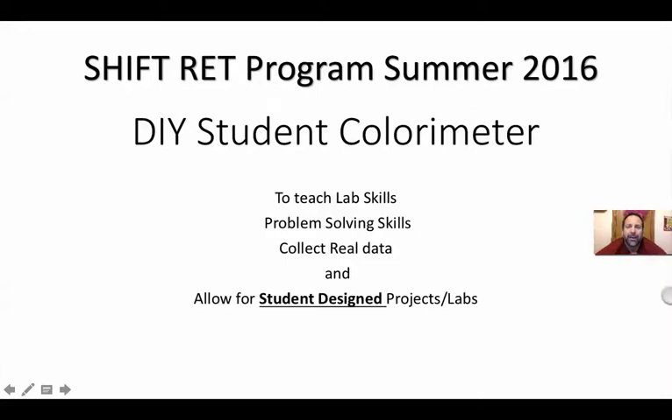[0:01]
Hello. I'd like to give you a little insight into some possible things you can do in labs that may not be as cost prohibitive as things in the past. And part of this came out of a program I was in the summer of 2016. It's an RET program through KU.
We were charged with the task of trying to create at least a lesson plan slash lab that we could actually introduce to other teachers that could possibly help them with various lab skills in their classroom. So what we came up with was very simple, a do-it-yourself student colorimeter. And you're probably saying to yourself, well, we've got colorimeters from different companies. We can buy them. We can have them in the lab already. That is a true statement. But what we are offering is completely different.
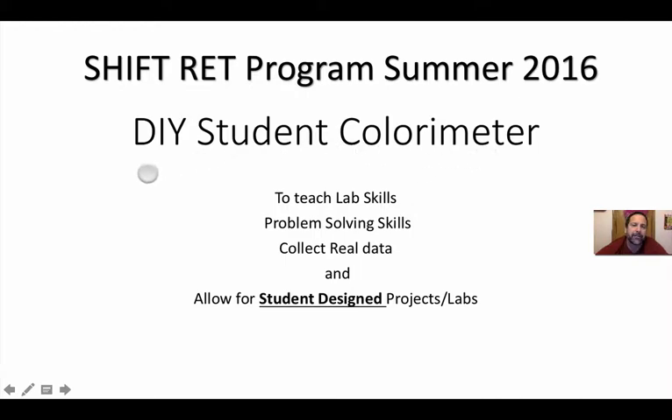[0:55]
It's going to be a very, very simplified version of a colorimeter. And the neat thing is, students put it together, and students have to troubleshoot any problems that go along with it versus you having to look at a piece of equipment and see if it's hooked up right. So why do we want to do something like this?
Well, we want to teach lab skills. We all need lab skills. Students need lab skills, and they're lacking a lot of different skills. Problem-solving skills, which is part of the problem. A lot of times they just push a button on a machine and it reads the number, they type the number down and they don't have any idea what the number means. They're just collecting data, so to speak. Well, they'll be collecting real data with this device we've got here.
And the other aspect here, which is the neat part of it, is it allows for student design projects and labs. Let's have students design a lab and collect some data and try to interpret what they get. That's really the ultimate goal here, hopefully.
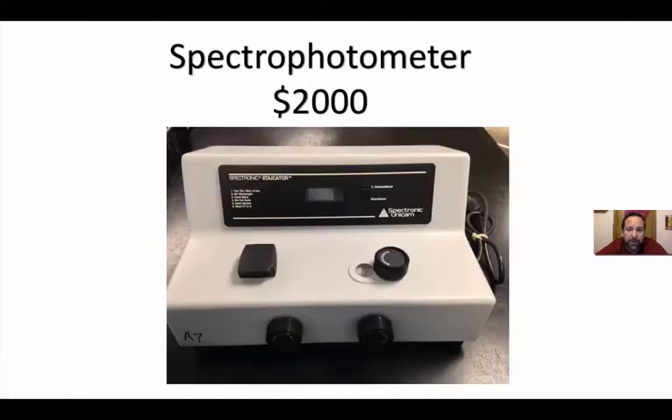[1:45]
So most of you might have something like this in your class, in your lab, a Spec 20, okay? We've got one or two of these at our school. If we've got a lab intensive activity where we have to read out absorbances or transmission, it's one student at a time with this, especially if they have multiple trials to go through. It's a very slow process. It takes days to get the whole class through something like this, okay?
And that's why a lot of teachers sometimes will just use this as a demo. Well, with that demo by itself, all the students look at this and they think, that's just a big black box. I know I put the tube in there, and I look at the number here, and I write it down, and I'm ready to go. Well, we want the students to try to get a little more out of it than that. So this is cost prohibitive in that context.
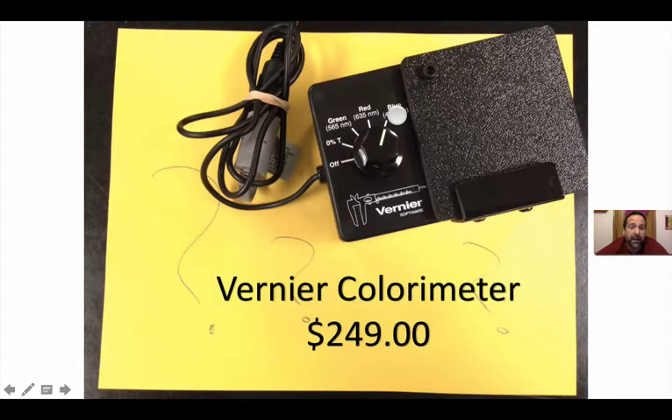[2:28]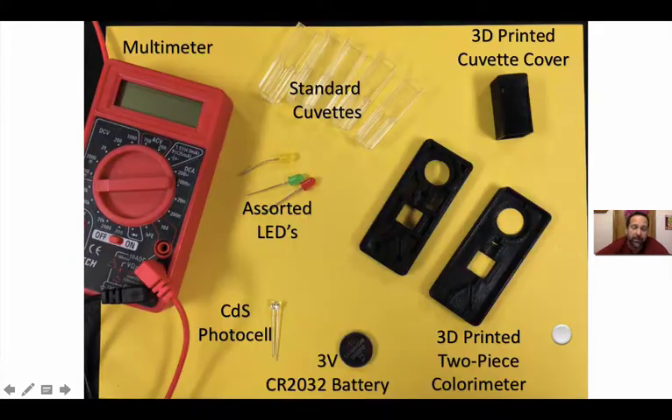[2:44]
The other options you've got now are some much cheaper options. A Vernier colorimeter. A lot of times they have 3 bands at 3 specific wavelengths you're looking at. And they're very good devices, and they're used quite a bit more now than I think Spec 20s. But again, they're about $250 each. What we would like to introduce to you is something much, much more student-friendly.
So a multimeter you can get at any Radio Shack or Harbor Freight. We got ours for this activity for $6 each, okay? Standard cuvettes, if you've got those in your classroom for another device, they're the same size, so they're standard size. We got these, about 100 of them, for less than $15 on the internet. So that $15 goes a long way on those.
LEDs were just little assorted LED packs you can get at like a Radio Shack. These were less than $4 for an assorted pack of 20. We also purchased a CDS photocell, which was a pack of 5 of these for about $4. Okay, and then for the source of energy here we used a 3-volt CR2032 battery, a very common battery you can find at stores.
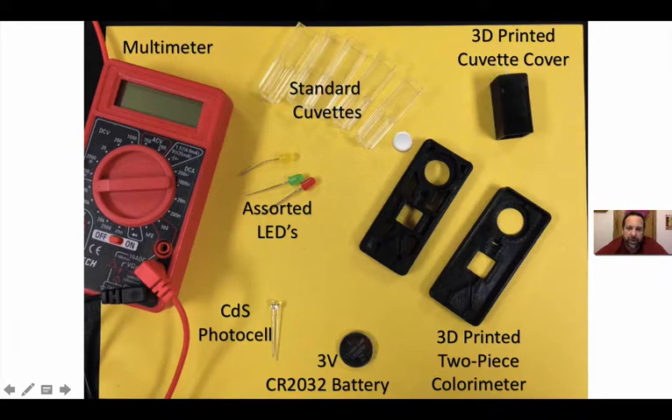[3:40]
Where we've changed the game here is we've added this 3D printed colorimeter. It's a 2-piece colorimeter, and it has a cuvette cover. Okay, and we'll take a look at what this is. Everything on this page, when you combine all this together, is way less than $20 for this setup. And what's neat about it is it's pennies to actually print these if you've got a 3D printer, and we have all those files for you.
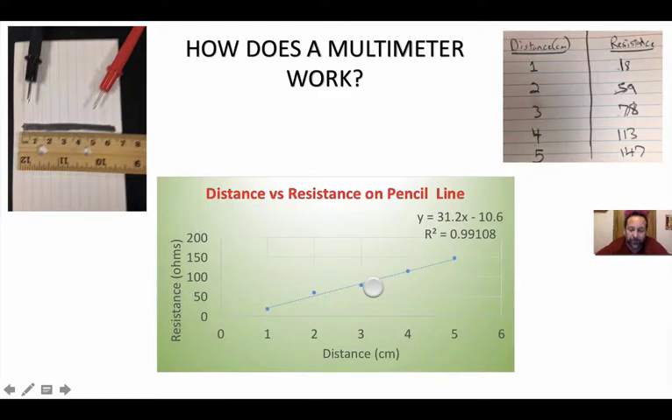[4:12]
First of all, if you hand a kid a multimeter nowadays, they don't know what it does or what it is. It's got a lot of dials on it, etc. So one activity we start with is, if you're going to use this equipment, you've got to know what it does and how it works. One introduction to doing that is very simply getting a note card, having them write a pretty thick graphite line with a pencil, and then having them try to determine the resistance in ohms at different distances along this line. A very quick data set we collected from 5 different centimeters, and those are the resistances we got. We graph that.
We got a line of best fit. We get a 0.99 correlation coefficient, which means that's a pretty good fit. It gives you a very good idea, at least it does to me. Now, a student that does this needs to look at this and try to determine what the relationship is. Is the resistance going up as I go away from my point of origin, or is it going down? Again, problem-solving skills using graphing, and also probably introducing some Excel spreadsheet activity if you could.
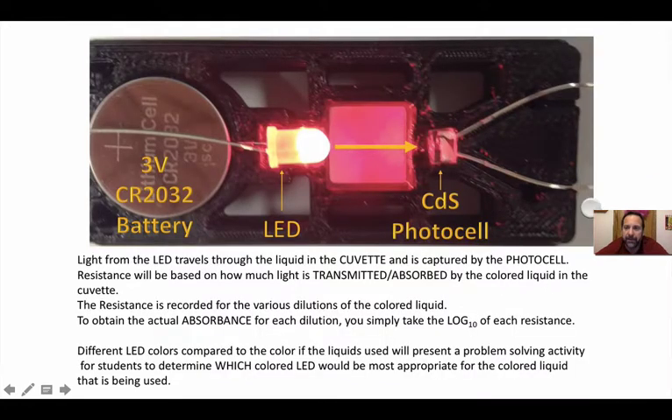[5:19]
Now, the meat of what we've got here for our device is this. This is just looking at it from the top, with the top off. This is the base plate of the 3D printed colorimeter. We've got a 3-volt battery that essentially powers the LED, in many different LED colors if you want. This is the opening for the cuvette to be sitting in. And then this is the CDS photocell that receives any light that comes through the liquid. Based on the liquid you put in here, a certain percentage of that light will either come through or will not come through, and based on that, this is going to read a certain resistance. These are connected to your multimeter leads.
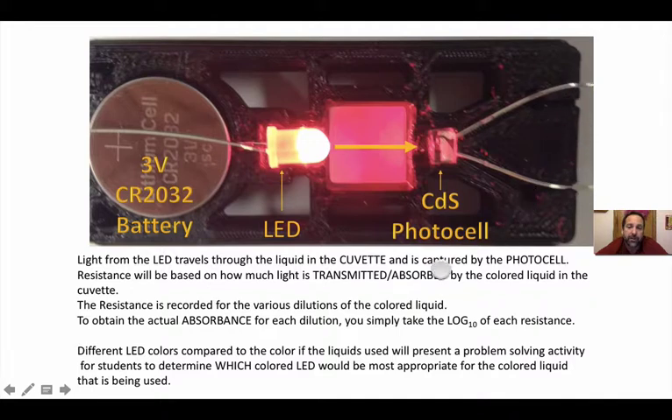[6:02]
All right, so what happens is the cuvette is essentially housing the liquid that you're trying to determine the concentration of. So this is a very simple operation. The only difference here is if you're actually going to look for absorbance, all you do is take the log 10 of your resistance value, and that will give you the absorbance, and that's based on a common formula.
So the benefit here is you've got any number of different LEDs you can use. The question is, which LED do you want to use if the liquid's red, or if the liquid's blue, or if it's green? What's the best LED to use? Those are questions you could answer, but it would be much better for a student to determine which one's best to use. And how would they do that? Well, they'd have to set up some experiments to determine that. That way they actually have a very good working knowledge of the whole device.
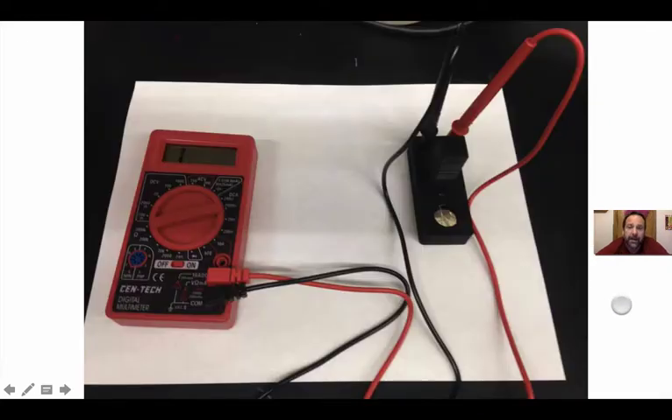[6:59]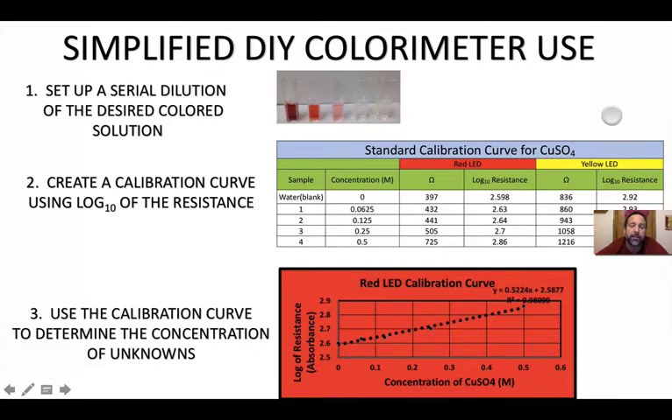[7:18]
Okay? So the setup really looks something very simple like this. You're going to have a cuvette here that you pull the cover off, you put the cuvette in, you put the cap on. It's pretty straightforward, making sure that you're reading ohms at the right level according to the instructions. And then this is really an example. You could take any colored liquid. In this case, it could be red food coloring, and I serially diluted it. So I've got these dilutions, and then I put each one of these in the do-it-yourself colorimeter and recorded the ohms that we're reading. And then after that, I took the log 10 of each one of these resistances.
So that's what the log 10 of each one of those are. So I graphed the concentration versus the log 10 resistance. And this is when we used a red LED. We did the same thing for a yellow LED, and we got a different graph that's fairly close to this one. Okay, just to show you that variance is based on what equipment you're using.
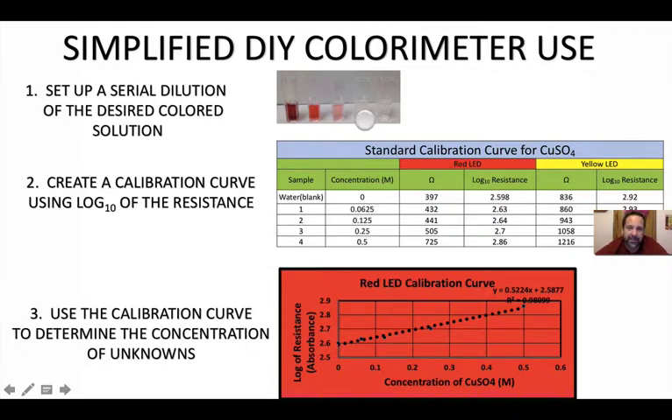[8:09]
So after getting this done, you can use this calibration curve that you produced, and this one was produced in Excel. Very simple. I got a 0.98 correlation coefficient, got a line of best fit. You could determine the absorbance of an unknown, get the log 10 of that. Once you find that out, you can go across, hit this line, and you can estimate the concentration of, in this case, copper sulfate. So the data from this data table and this graph are for copper sulfate, which is a common blue liquid used in chemistry. Okay, and the value of this is being able to have students determine concentrations of unknowns.
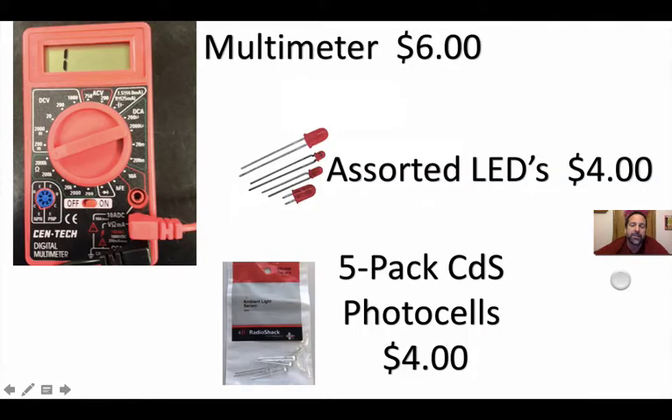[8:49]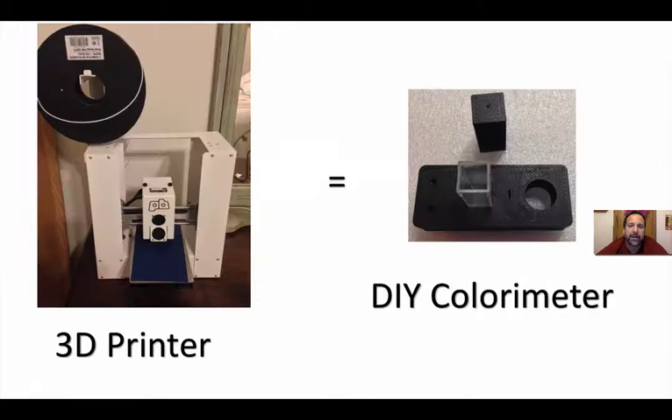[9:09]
Okay, so the setup's fairly simple. These are fairly cheap pieces of equipment you have to get. Once you get them, they last for a long period of time. The watch batteries will last for 12 hours straight if they're on full time. Intermittent throughout the classroom, they'll probably last for 6 to 10 days based on some estimated work we've done with them. The actual, in this case, we printed these, not the cuvette, but the top and the bottom of the colorimeter and the cover on a 3D printer.
The printing did not take that much. It might have been 20 minutes to print all three of these things together. Again, if you have access to a 3D printer, this is a very simple thing to do. We've provided you all the STL files you'll need to print those. So you'll load the STL files into your 3D printer, however you do that, and then it's ready to go.
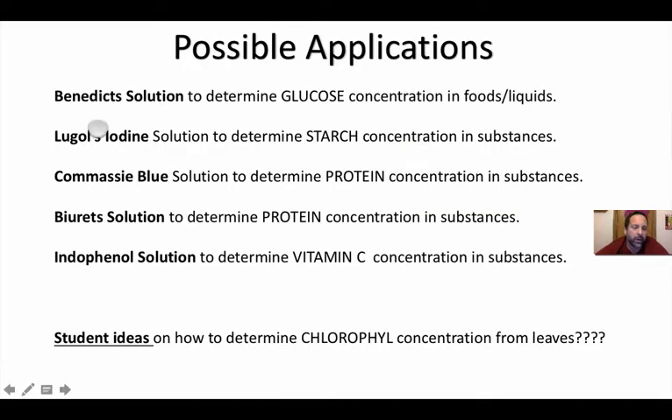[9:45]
So when can a student use this outside of just determining the concentration of red food coloring? Well, in biology, a lot of times we use different solutions, and these are all colored solutions that have color variance based on how much of what we're looking at, the target molecule, is. Glucose, starch, proteins, and vitamin C. These are solutions that will change color based on how much of that is present. So it's possible a student could try to determine how much glucose is in something using a Benedict's solution, serial dilution. Okay, so these are very common in biology.
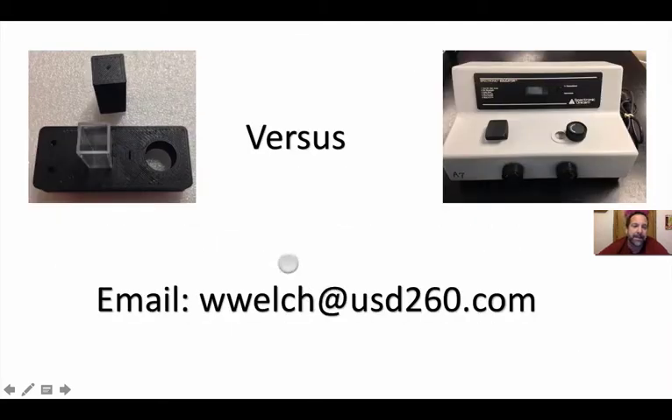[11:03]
But what is really neat about the whole setup we've got that makes this very beneficial to you is students can come up with their own ideas. One possibility is you can throw out some open-ended questions like how much chlorophyll is in this maple leaf versus this dogwood leaf. Is there a difference? Is there a difference in concentration of chlorophyll? It could be any pigment that you might be able to extract from something. Okay, and again, any of those are possible ways you can quantify it using this colorimeter. But we can come up with some very quick ideas for students. But when they come up with their own ideas, that's even better, because then they're actually becoming real scientists.
All right, so it's very simple. Would you like to have something that's very simple, cheap, inexpensive, student-oriented, and student-driven and student-understood? Or would you want this big black box that costs about $2,000? And they're still very usable pieces of equipment. Our suggestion is very simple. When students can put it together, they can fix it if anything goes wrong with it. And they also can troubleshoot it when something goes wrong. Students really can't troubleshoot this. It's pretty much up to the teacher to find out how to fix this, or call somebody else who knows how to fix it.